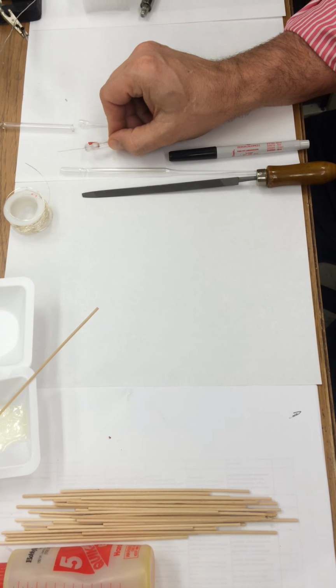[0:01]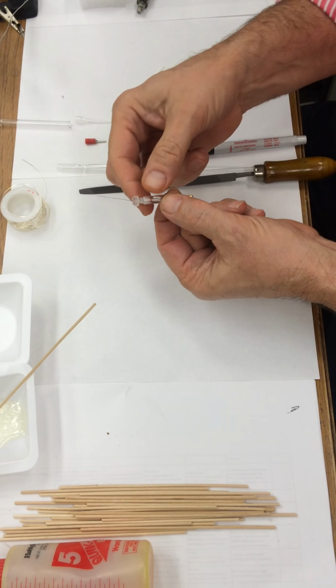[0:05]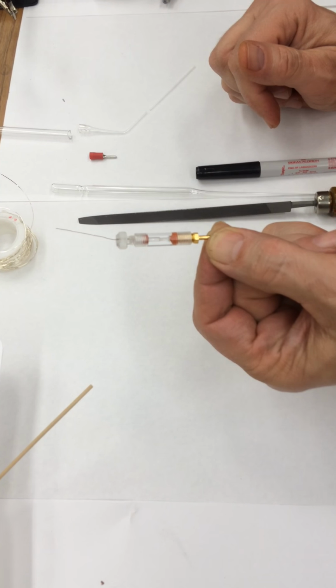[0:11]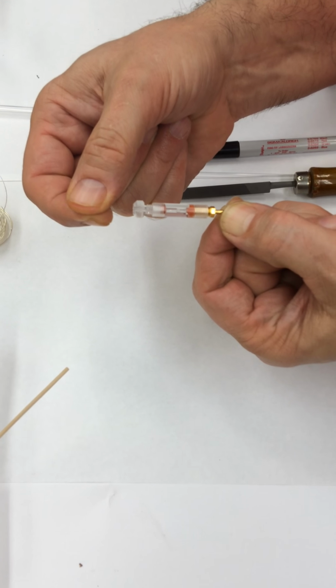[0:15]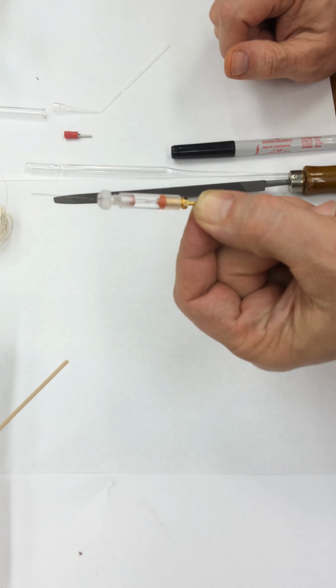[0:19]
So these electrodes right here, we use in the Bio350 and the Bio446 neurophysiology class. You buy these from a company, and it's just plastic with a little rubber stoppers here and a silver wire on the inside. This cost $84 each. So right now we're short of these, and we're going to go ahead and make some simple electrode holders.
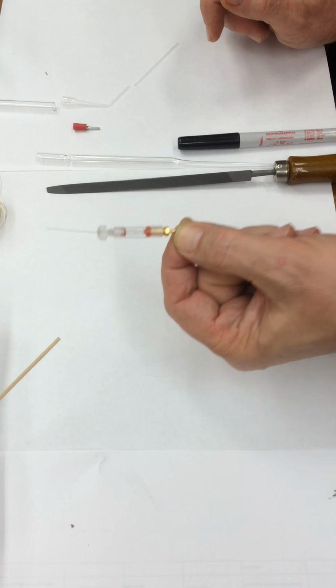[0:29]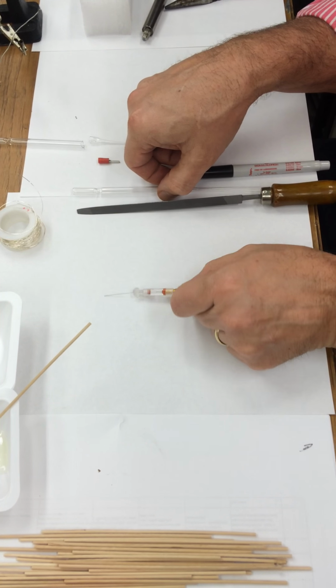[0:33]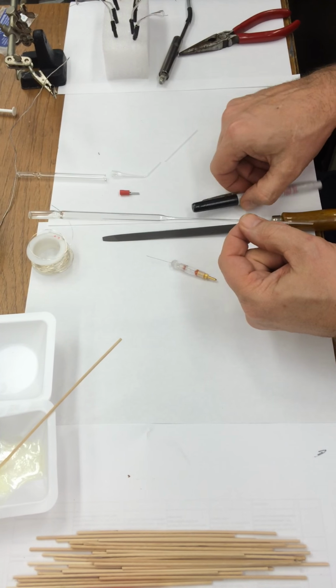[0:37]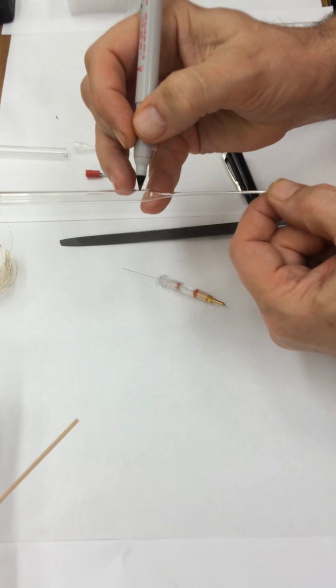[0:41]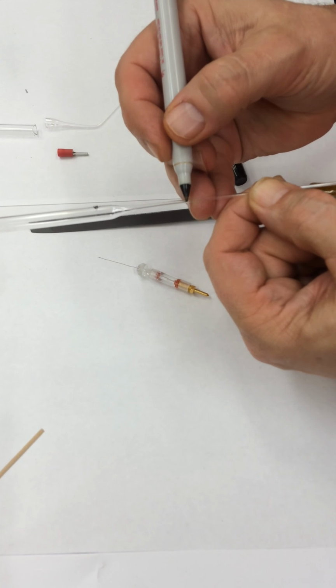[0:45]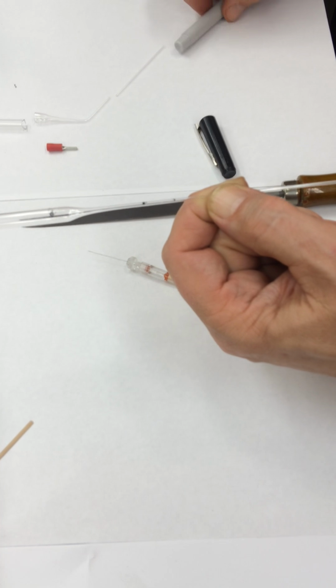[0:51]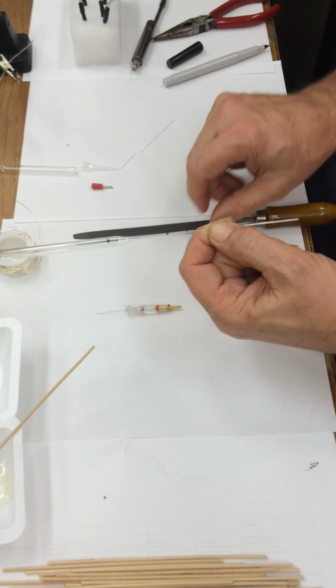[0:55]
These are for intracellular electrodes. So all you have to do, all the tools you need, are some very simple stuff that you might have in the lab already. One, a pasteur pipette. And what we do with this is we mark it in certain spots, like right here, and about here, and about here. And why do we mark that? Because these are the spots that we're either going to bend it or break it into.
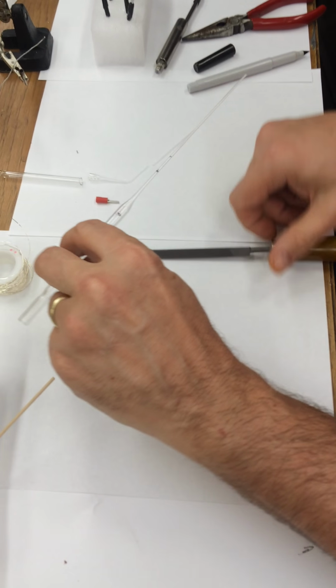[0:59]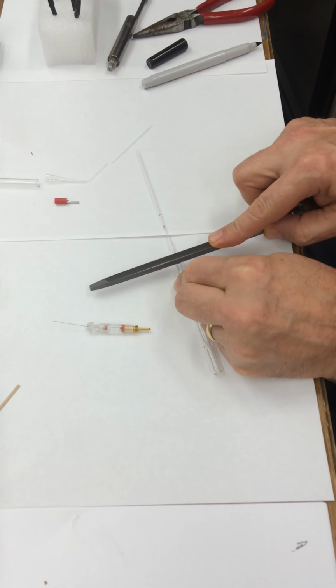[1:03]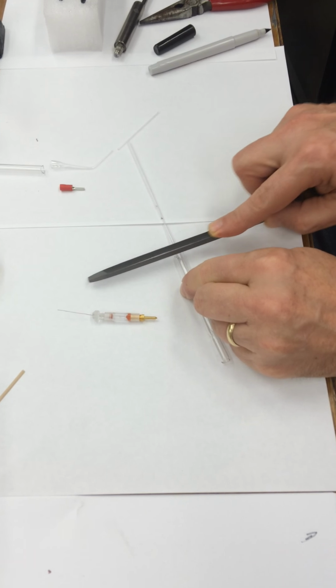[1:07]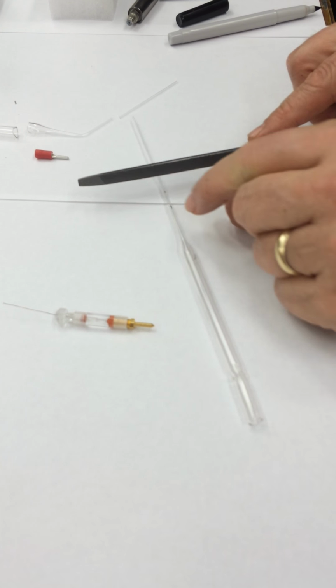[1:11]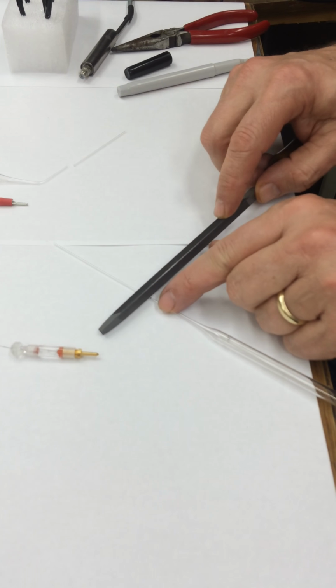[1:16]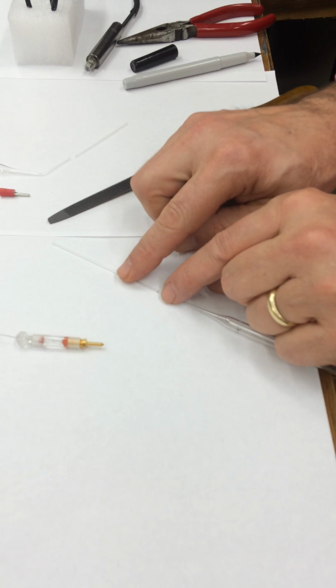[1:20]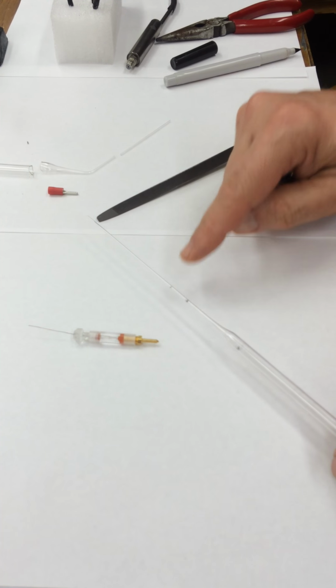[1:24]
And the way we break them is to etch them with a file. And so all one has to do is to go back and forth and then rotate the glass around and keep doing it like that. And then the hard part is the very fine tip on this side. So all you do is just etch it a little bit, and then about more than half the time after you get the hang of it, it'll break right the way you want it.
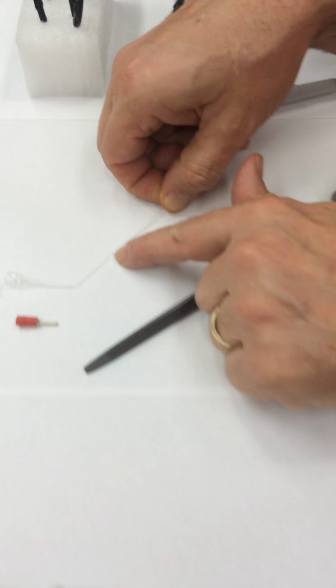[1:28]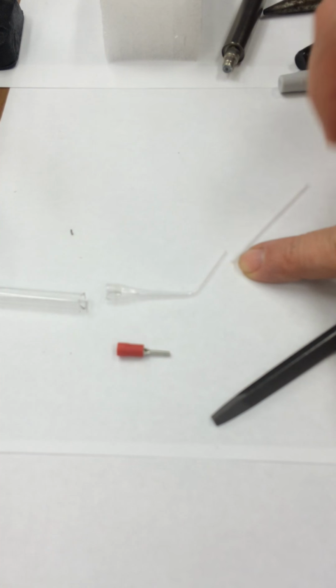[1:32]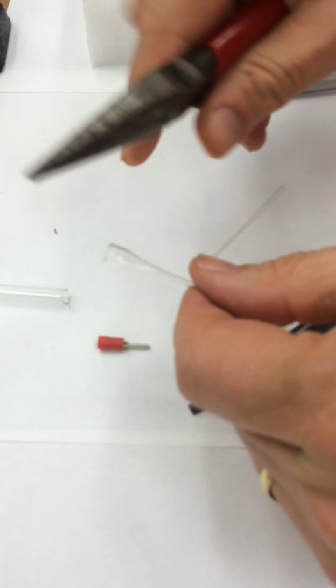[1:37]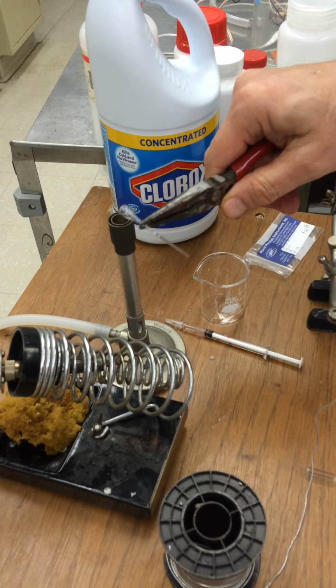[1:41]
So here's one that's broken, been cut here. You see it's here, and it's been cut here. And now what we do with this is we would take this, and because there could be sharp edges on there, we hold it with this and you put it over a Bunsen burner and you fire polish the glass.
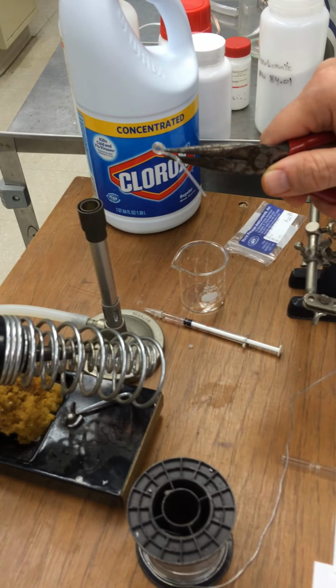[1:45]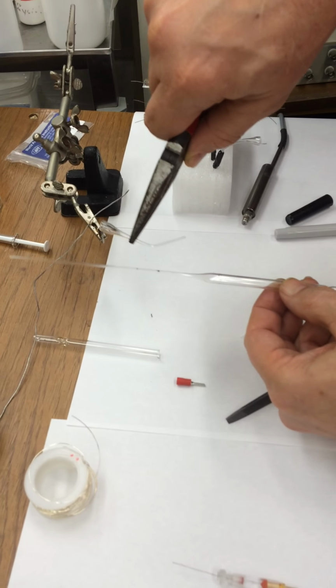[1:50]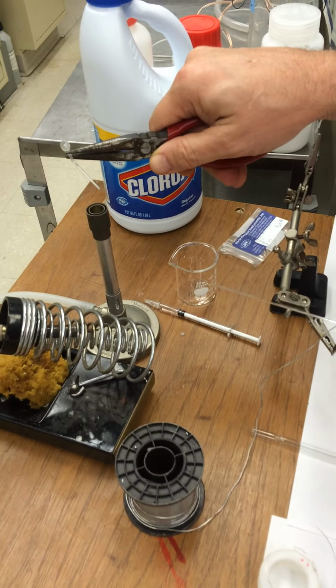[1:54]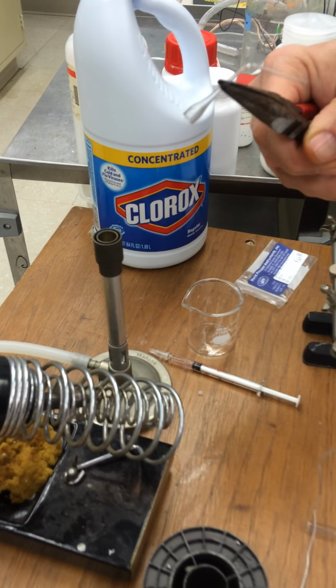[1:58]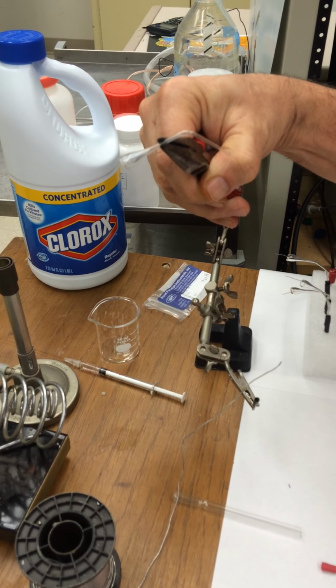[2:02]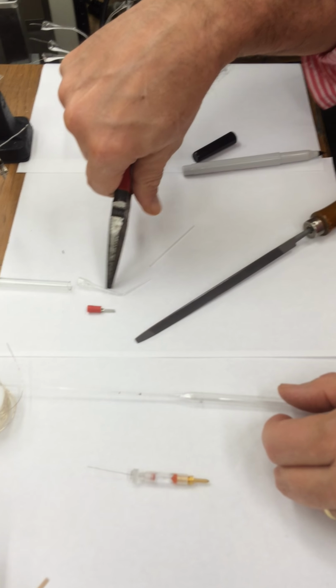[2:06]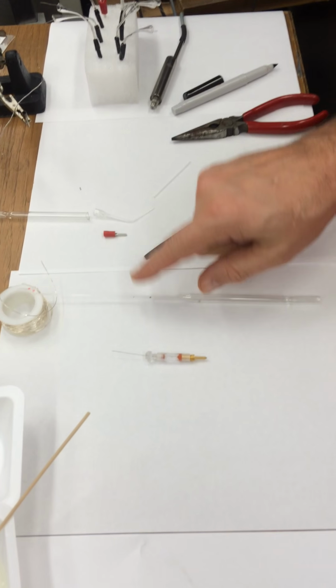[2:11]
This is already bent. Remember, originally it was just straight. So what you can do to bend it is just put that over the fire and it will slowly bend down like that. You want it about 45 or 30 degree angle for these electrodes, and I'll show you why.
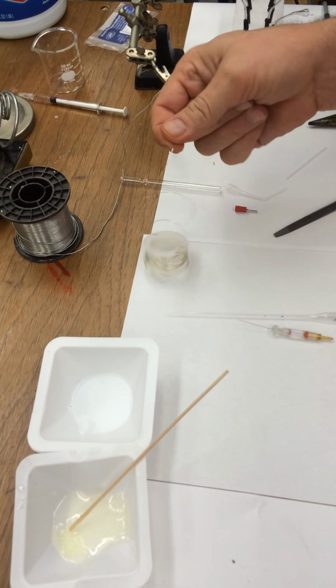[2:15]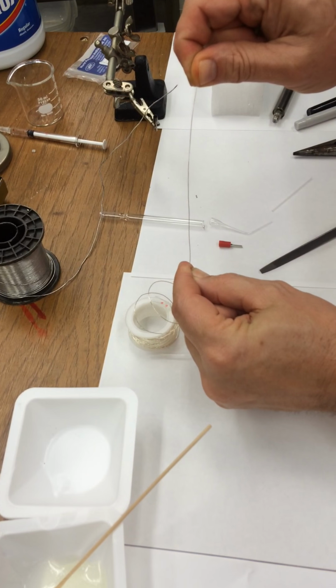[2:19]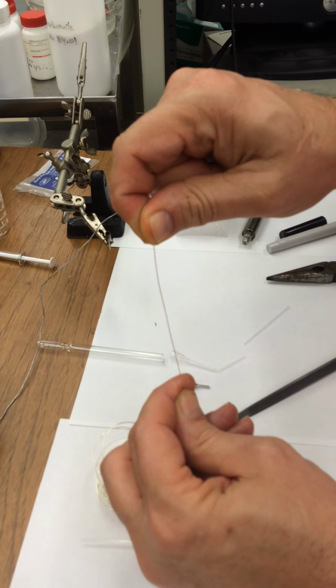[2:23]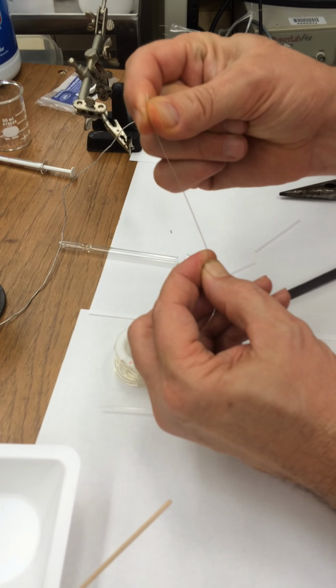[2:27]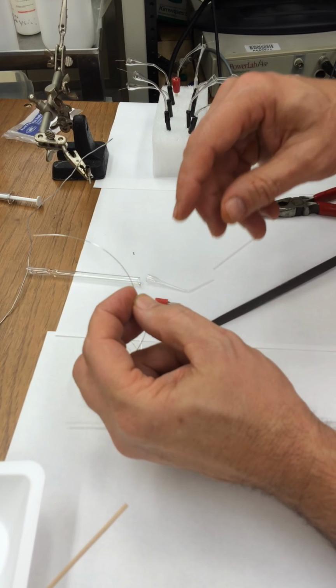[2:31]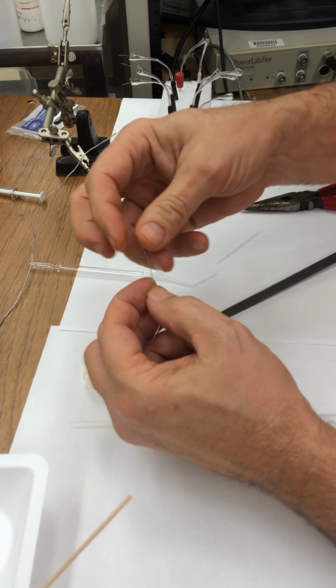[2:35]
Okay, so that's there. So now what we have to do is to get our silver wire that we'll use for intracellular electrode. So get some silver, and you have to watch out what type of silver wire you get, the size of it, because it has to go inside of a microelectrode. Some silver wires come with a coating on it. You don't want one with a coating. What you can do is to cut it at various lengths, and you'll see at the length that you'll need after you make your electrode.
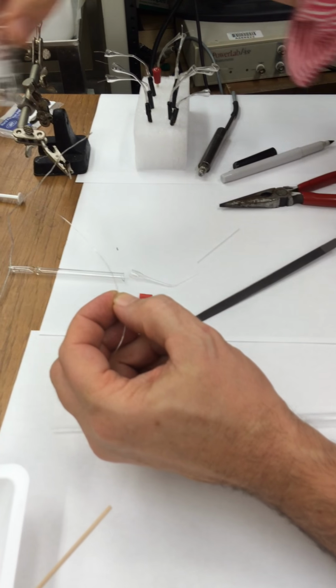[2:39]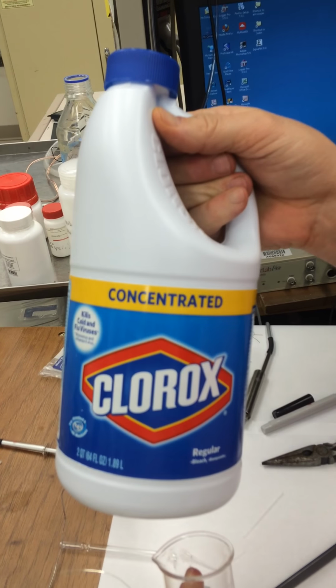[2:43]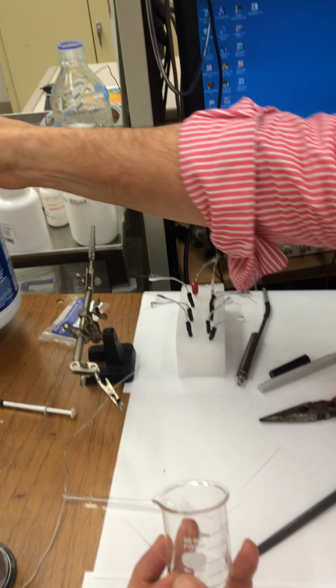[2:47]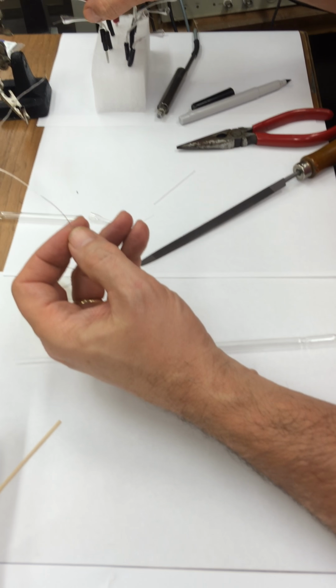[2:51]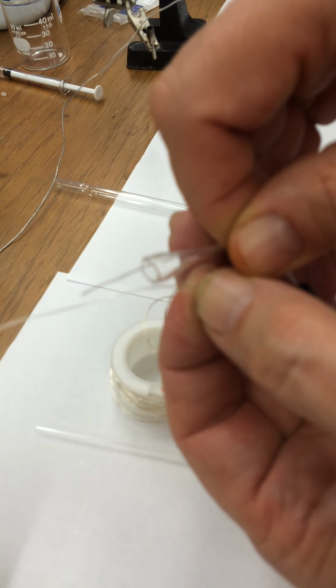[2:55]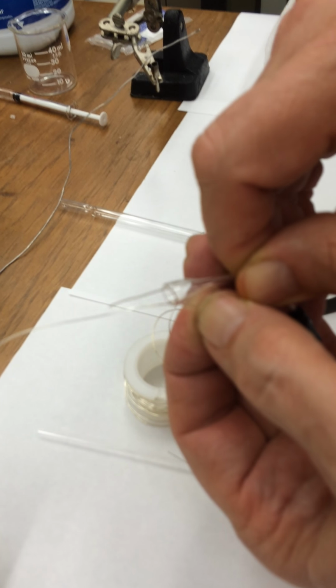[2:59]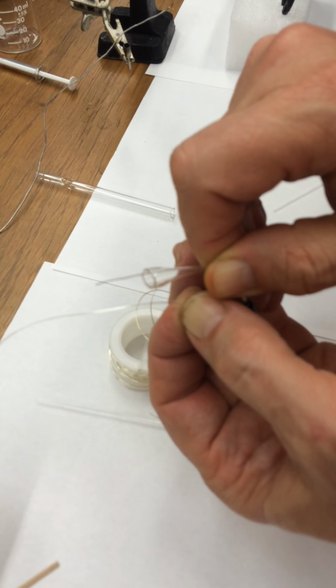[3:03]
So you cut it, and then you bleach it in a beaker with concentrated bleach. Let it sit for about 20 minutes, and now that will chloride your silver wire. Let me just show you the difference between a chlorided and a silver wire that has not been chlorided. See how shiny that one is? And how gray the top one is. This one sat for 20 minutes in bleach.
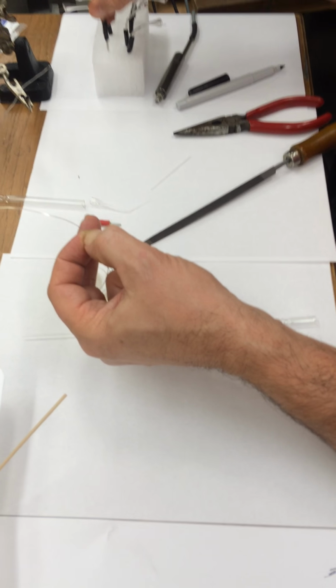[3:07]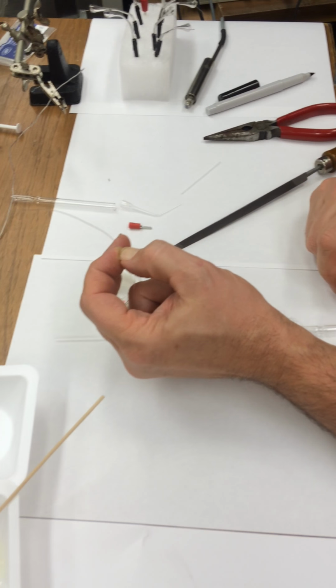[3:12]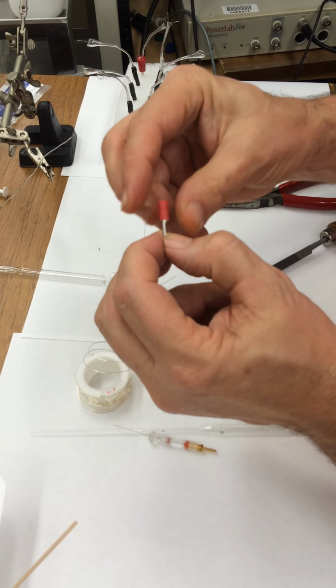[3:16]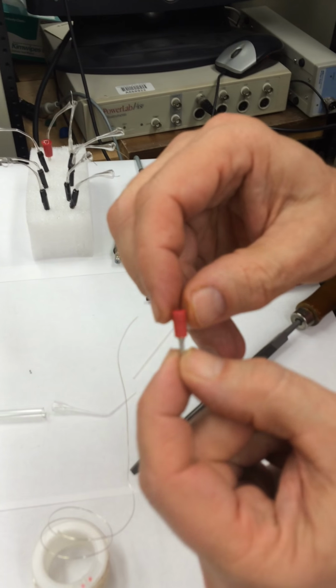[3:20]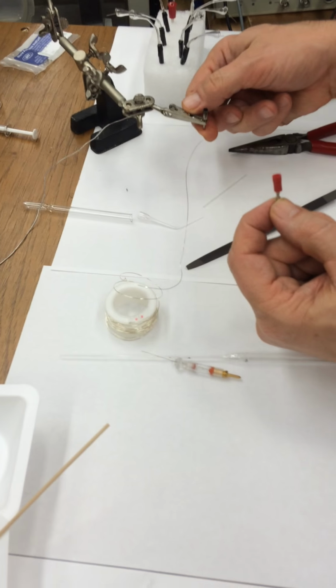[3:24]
Okay, now after you've chlorided your wire, you go ahead and wash it off, and now we can solder it onto our little holder. So you take a little holder like this. It's a 2 millimeter pin that you can order from various places. They come at different types. Here's one over here as well.
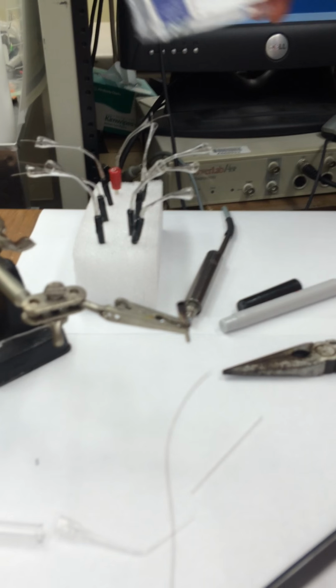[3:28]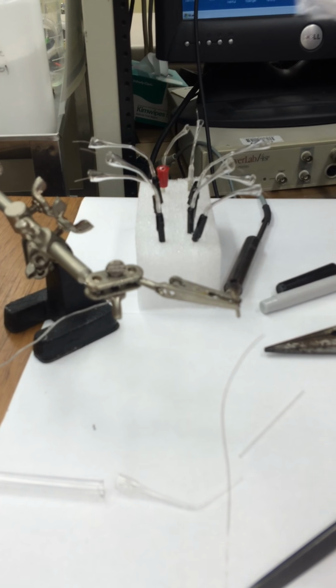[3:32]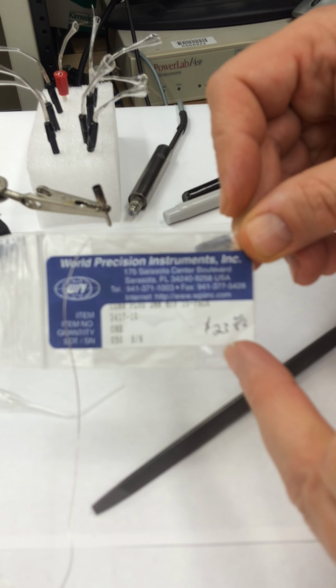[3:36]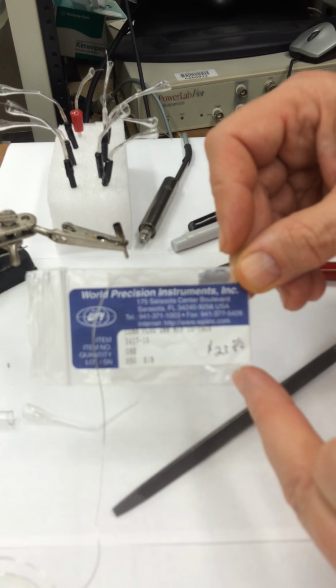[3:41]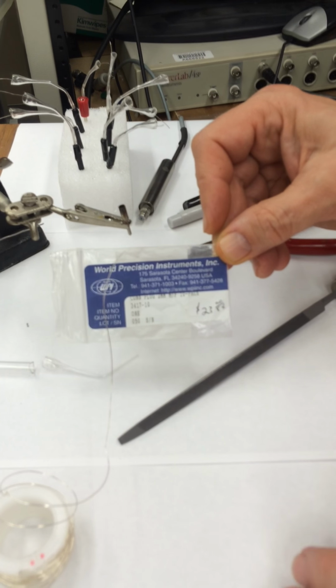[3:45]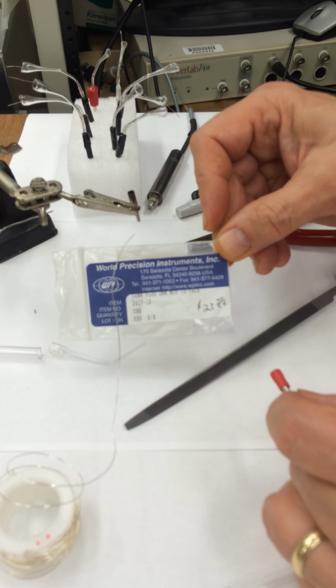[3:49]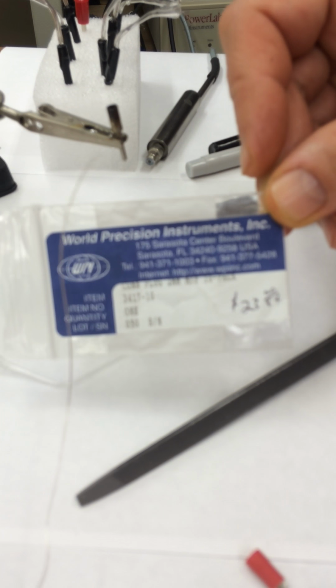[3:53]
The ones that we are using over here that are on our electrodes that we've already made are from World Precision Instruments, and it only costs $23 for a pack of 10. So divide this by 10, $2.30. If you add up the glass and a little bit of silver wire, that might be another 50 cents. So for $2.50, you will have an electrode instead of an $84 electrode.
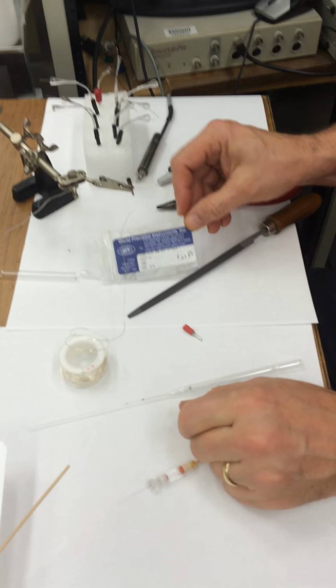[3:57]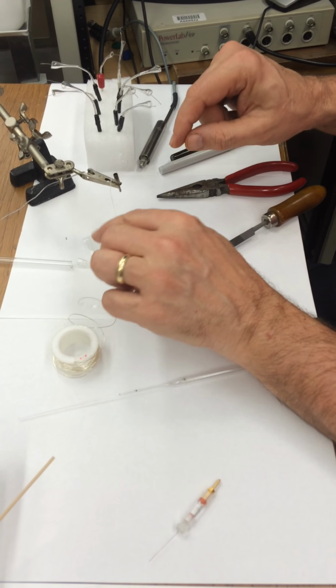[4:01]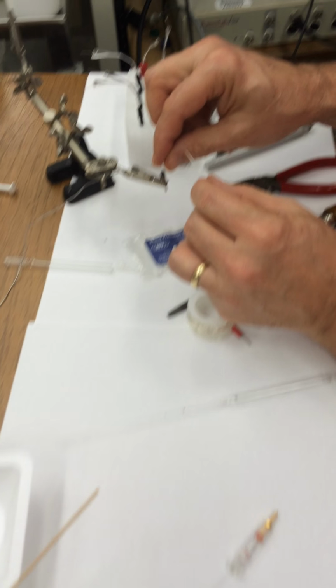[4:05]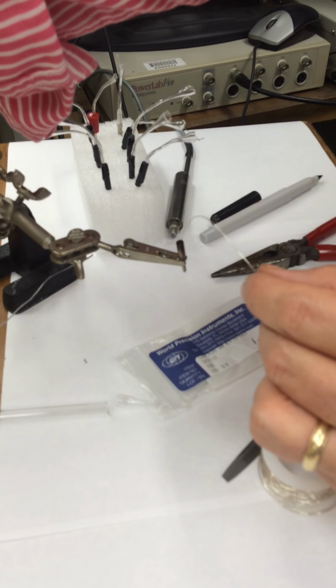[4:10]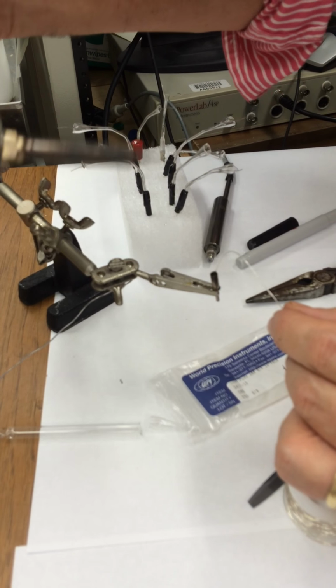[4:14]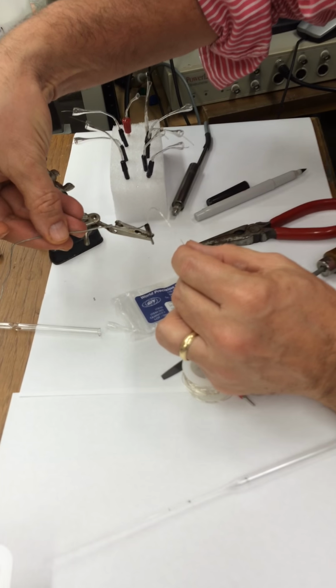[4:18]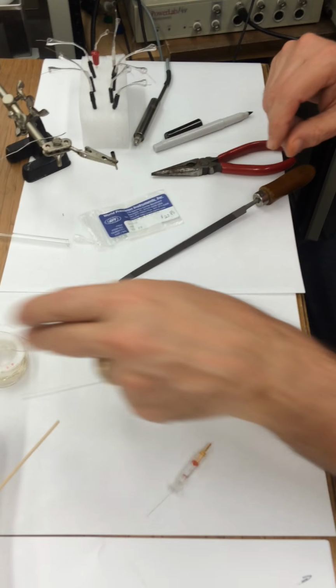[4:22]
All right? So now that you have that silver wire, and it's chlorided, you can go ahead and put that into your pin holder. It's a 2 millimeter pin, and go ahead and solder that in with your soldering iron. All right, and hopefully you know how to solder and get that in there. If not, there's lots of YouTube videos that you can watch.
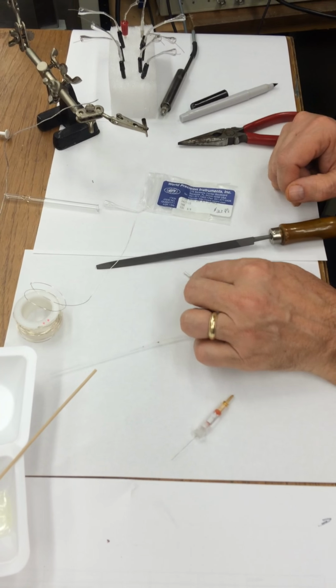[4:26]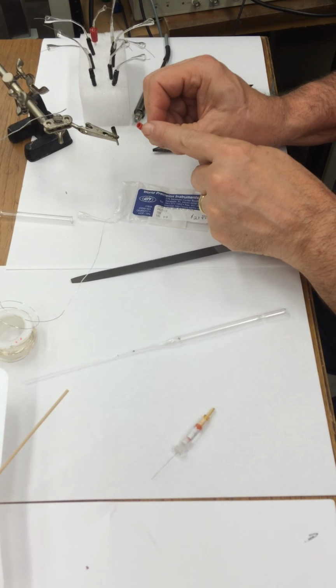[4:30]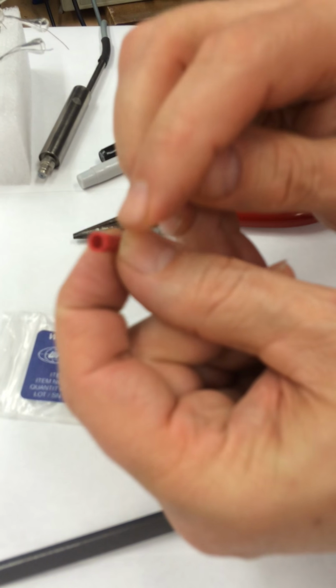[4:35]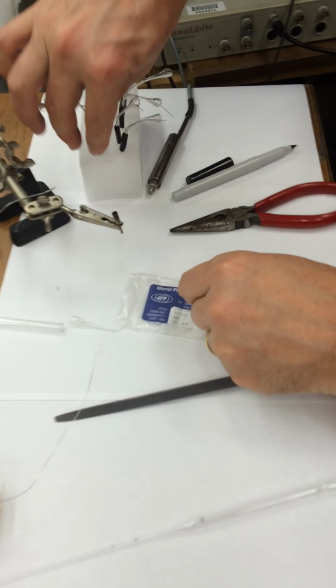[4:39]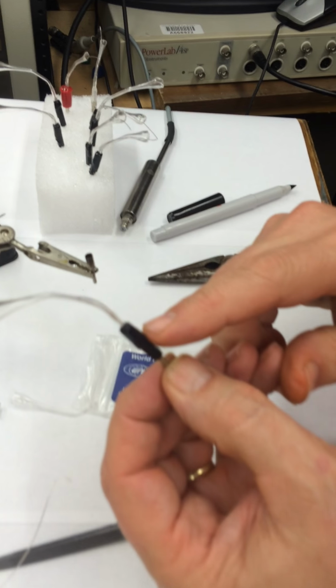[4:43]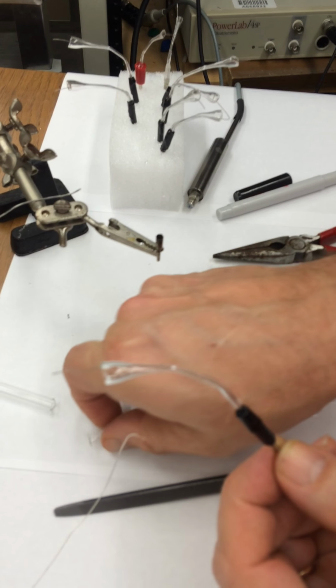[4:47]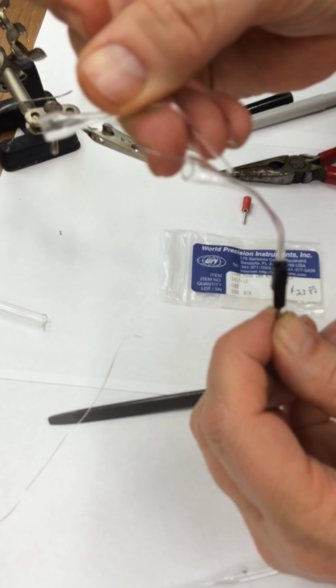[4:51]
Okay, after that's soldered in, or maybe one of these. There's all different types of little pins. I like these because they have a connector on the side. Sometimes you have to take these connectors off when you solder, otherwise that will be melted. So let's look at the ones from WPI. After it's soldered, I feed the glass over the silver wire like that and put it down on the pin.
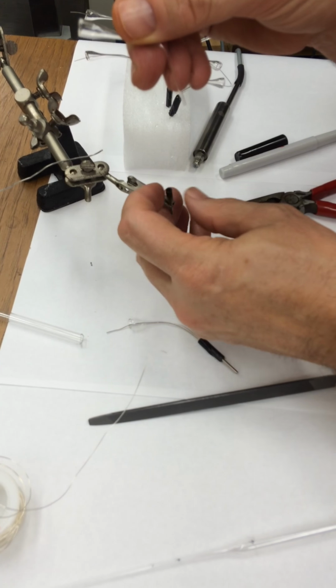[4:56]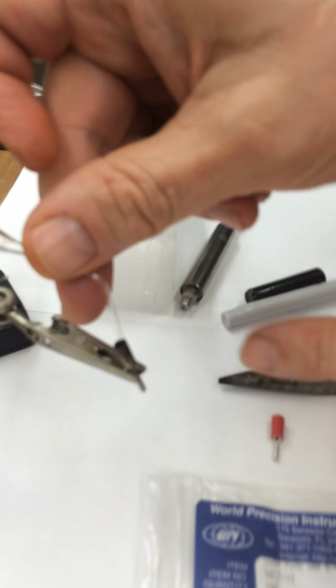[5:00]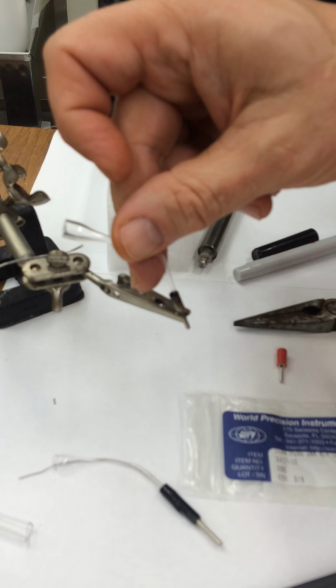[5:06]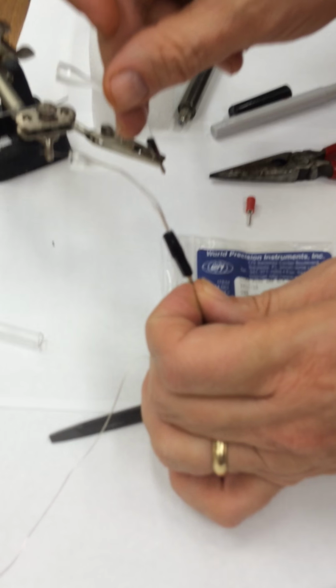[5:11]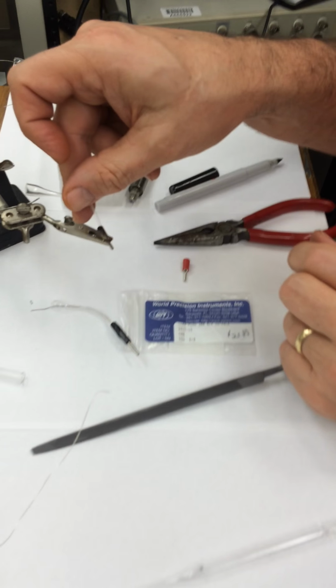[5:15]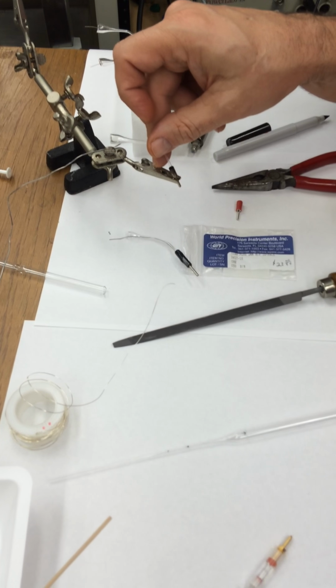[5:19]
It would look something like that, like right here. The little black thing can slip up on there, and some of these have a screw so you can tighten it on, or you can even use heat shrink tubing that will shrink when it's hot, and that will help hold it together. Why that's useful is it gives it some support so the glass won't break right there.
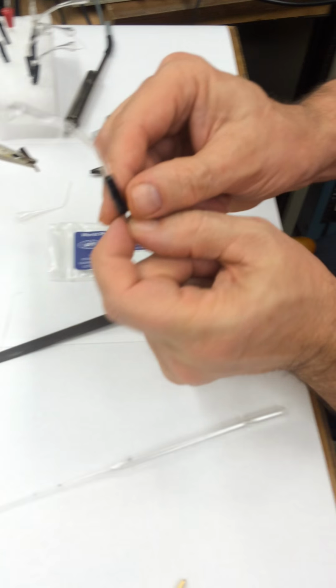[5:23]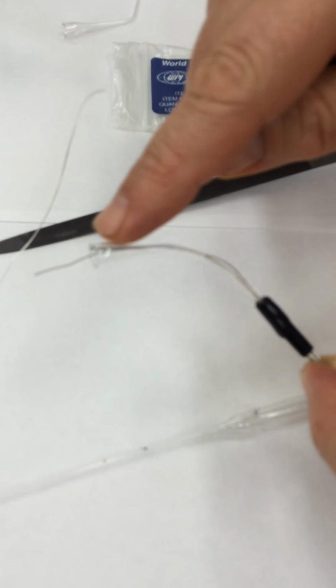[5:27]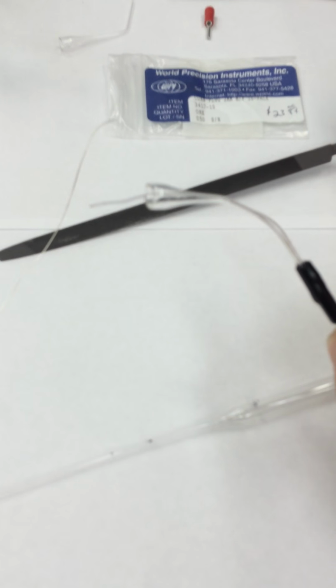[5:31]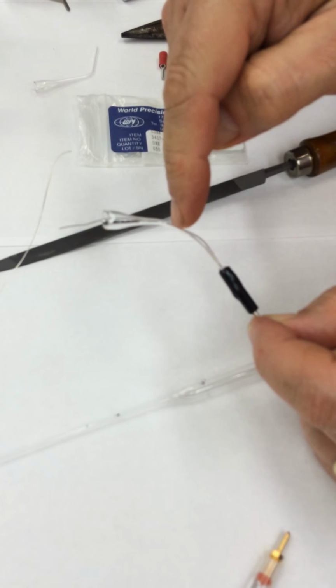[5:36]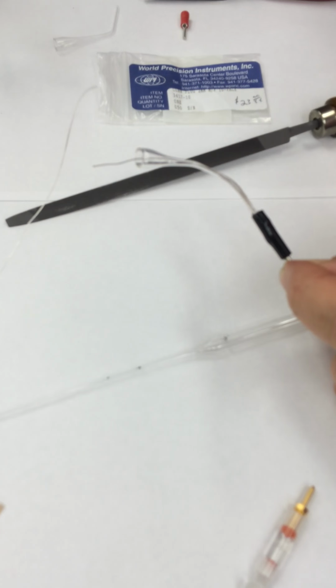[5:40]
Now let's look at one of these electrodes. So you can see this electrode here has a little bit of a bend. And why is that open like that? Well, I think it's going to be easier for the students to load their intracellular electrode onto this. You can look at different versions, but this one might be relatively easy.
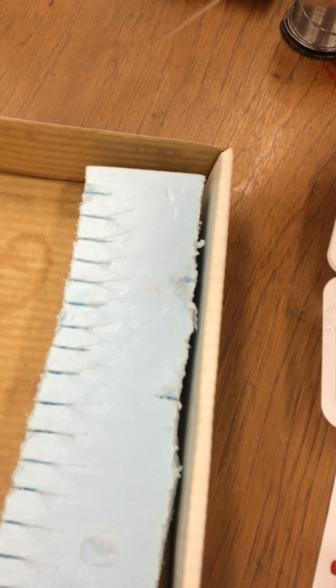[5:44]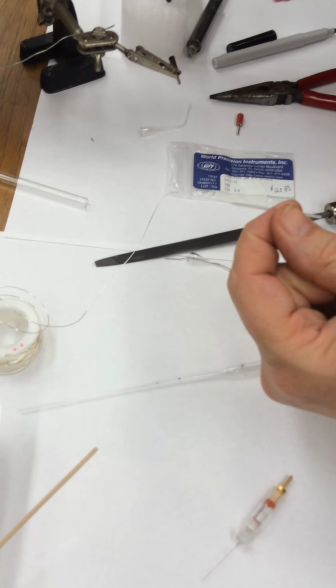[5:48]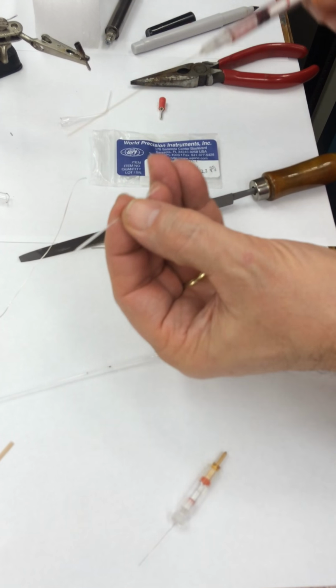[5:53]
So what we're going to do is to take our intracellular electrode, and remember when you fill these, I saw somebody the other day in the Bio 350 lab filling it with the,
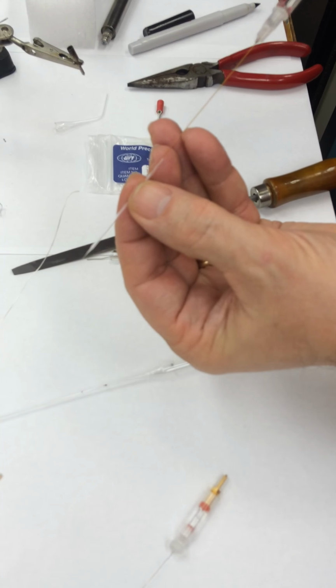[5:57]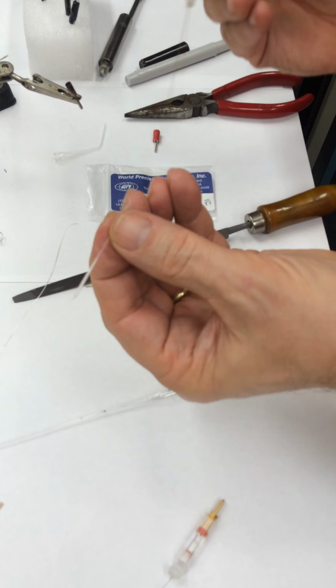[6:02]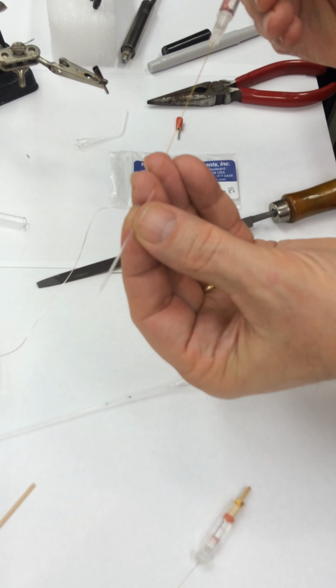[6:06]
let's see if I can get this down. Oh my God. Sorry. Anyways.
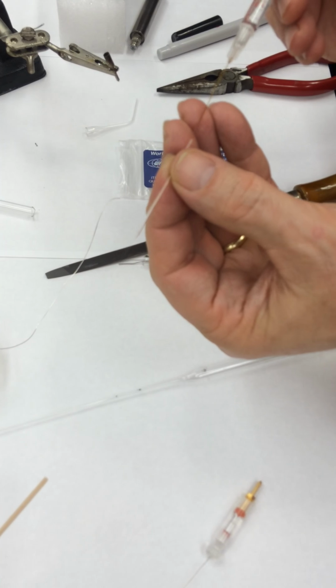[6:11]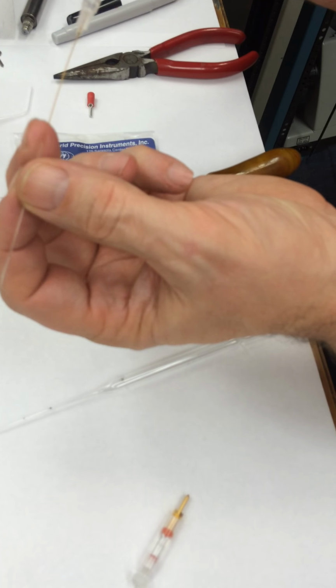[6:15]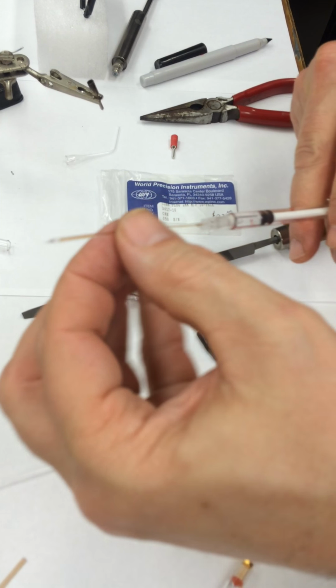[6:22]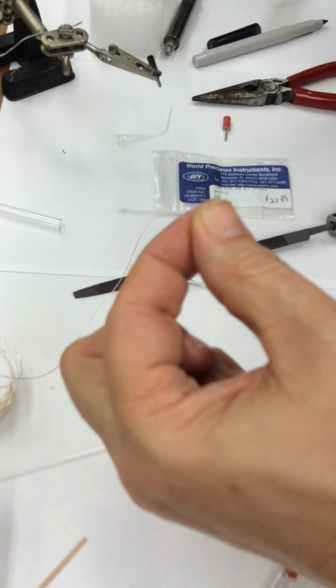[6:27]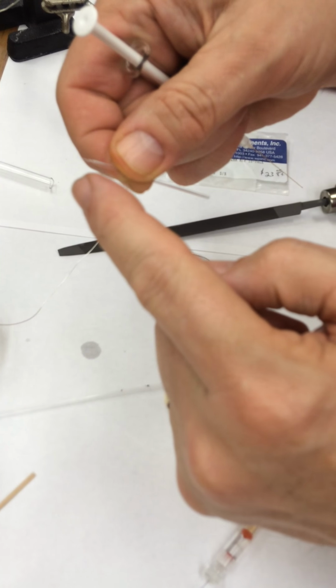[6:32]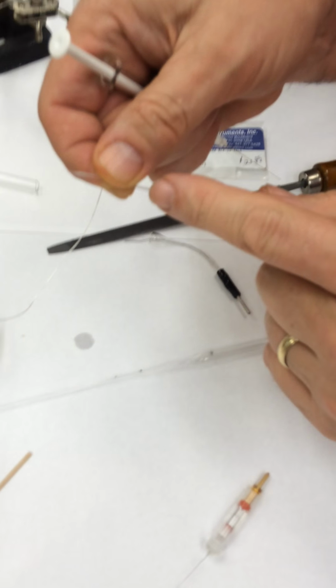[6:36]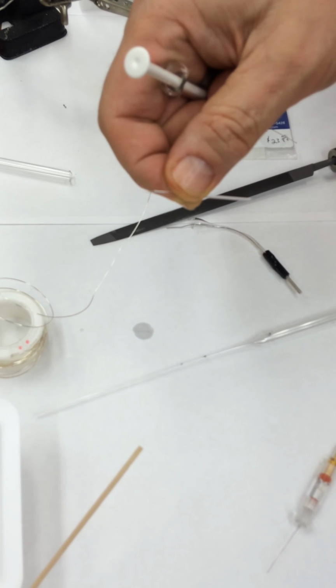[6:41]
You don't want to fill it like this, because what's going to happen? After the solution comes out, it's going to drip down over the tip. You want to hold it up and then fill it like this. And then when the solution drips out the back, that's okay, because you can take your finger and wipe it off, and there's no KCl on the tip of your electrode that's going to go into your bath. Remember, this is 3 molar KCl. If that 3 molar KCl gets inside your bath with your preparation, it will kill your preparation.
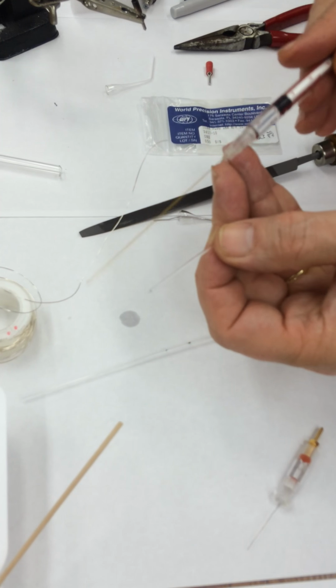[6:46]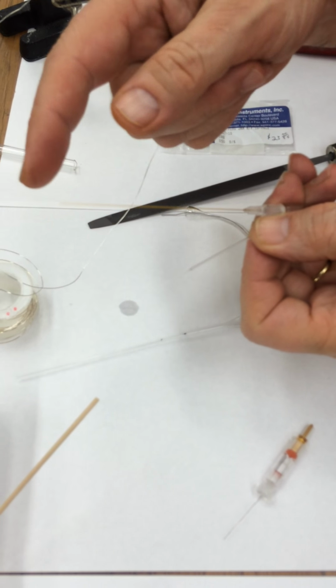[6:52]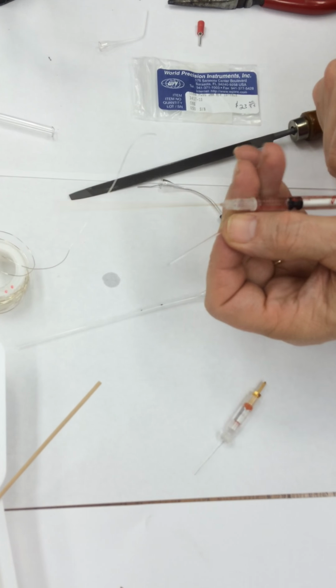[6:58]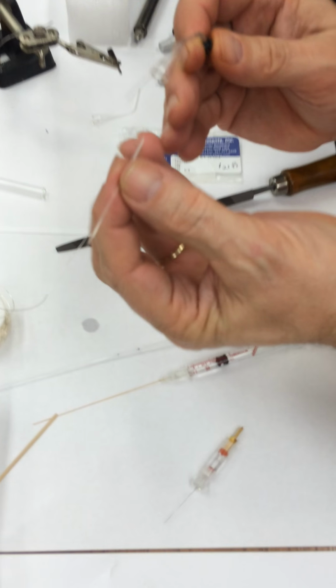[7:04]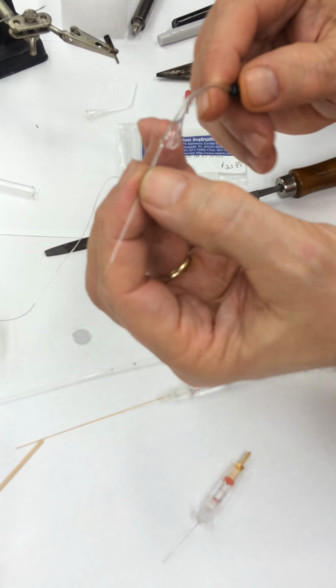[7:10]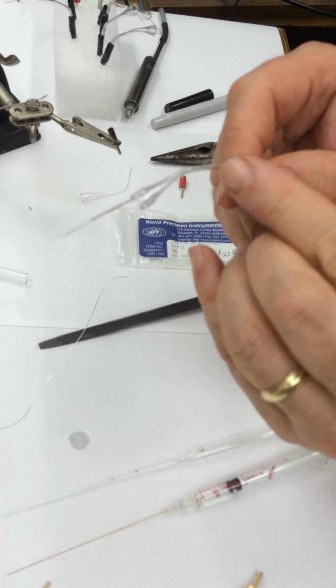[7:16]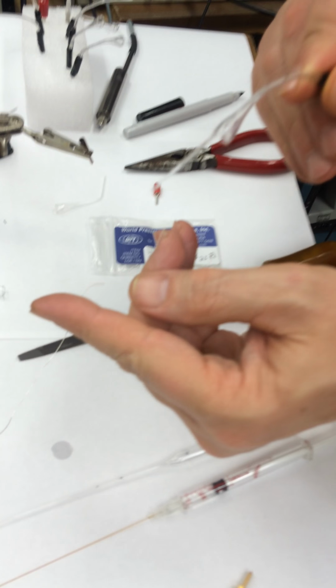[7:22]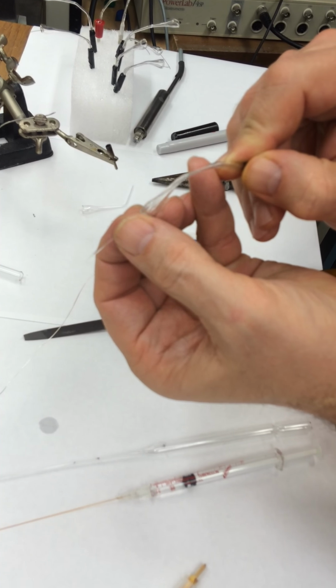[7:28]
Also, just something to learn is that these little filament electrodes are $10 each. So you want to be a little careful not to bend them too much and break them, because each one is $10. Okay, so after you have your filled electrode, you can put this right onto your silver wire. And what's nice about these electrodes, the way they're made, is you can just kind of twist that around. And now you see that the way this glass is actually bent again is that that electrode wedges right in there. So now when you push it in onto your preparation, it won't be able to push back anymore, because you've got it in as tight as it will go.
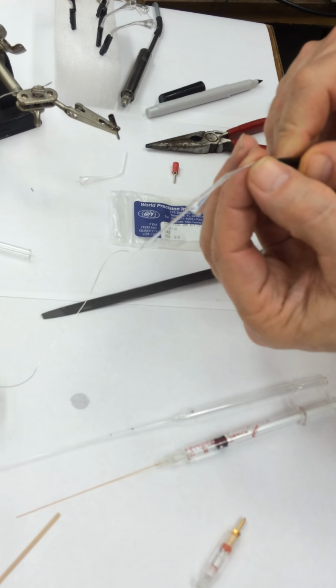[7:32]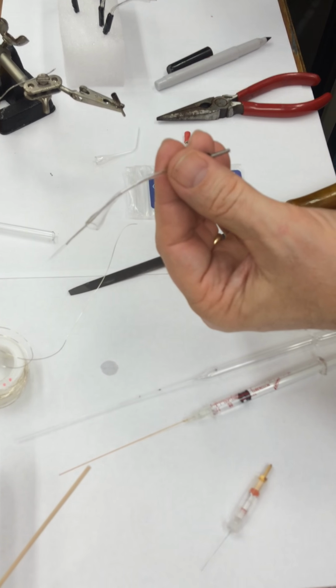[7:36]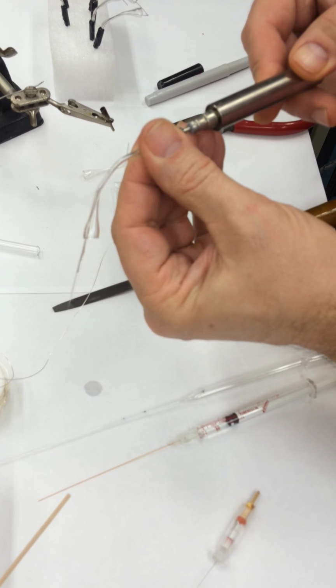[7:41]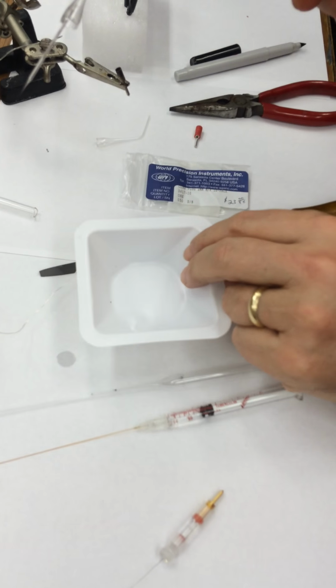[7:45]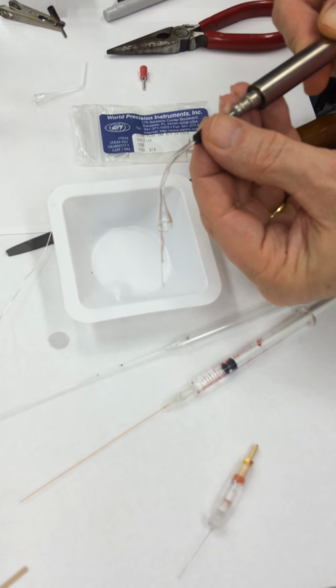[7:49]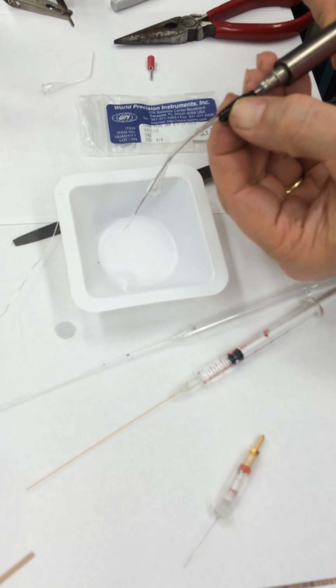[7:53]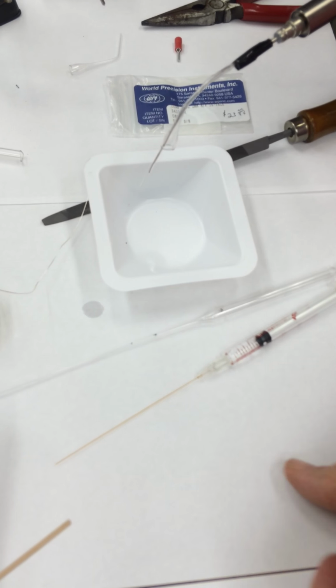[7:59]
So now it'll just poke into the muscle fiber or the neuron. What's nice about these compared to the other ones is that when you put it onto your intracellular head stage, you can have it turned sideways. And now pretend your preparation is in this dish, for example, and your electrode's here. You can put that in and then rotate this around, and now you're ready to poke your muscle fiber by moving your manipulator.
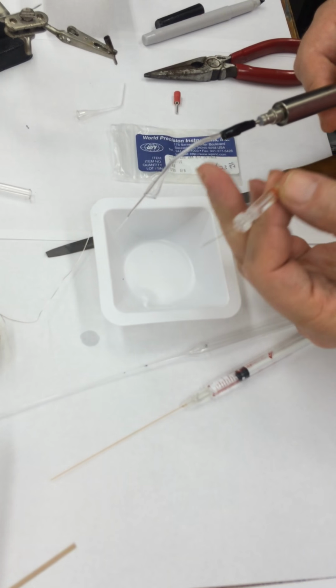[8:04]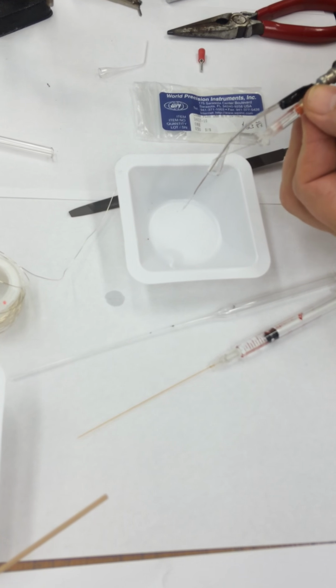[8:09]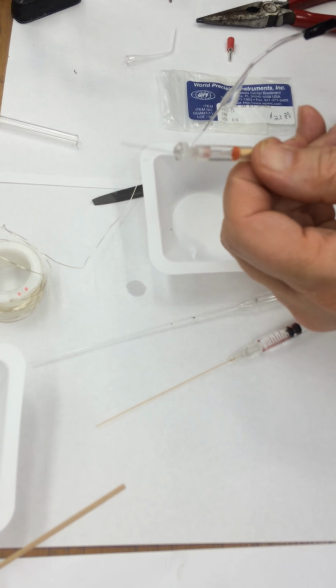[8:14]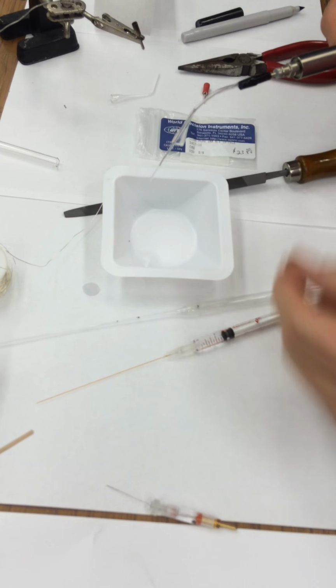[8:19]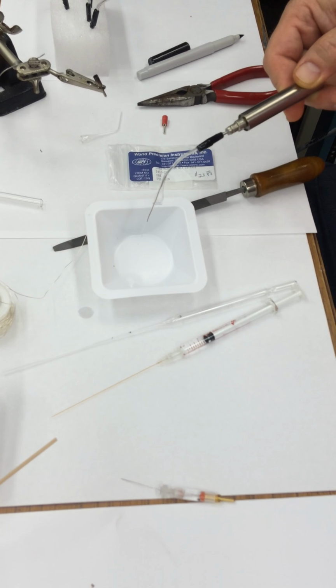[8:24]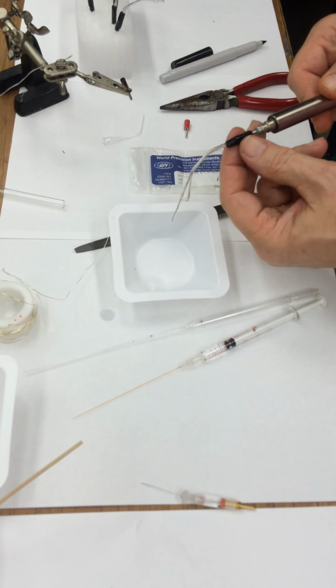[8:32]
This is also nicer, I think, than these, because this little bend helps you to go straight down on your muscle fiber instead of at an angle. So you'd have to tip this one a lot more to get down on there. They do make these at 45 degrees, but they actually cost you even more money. So this kind of cheap electrode for probably $2.50 will do the job and help you poke cells or muscle fibers. I've used these for a number of years, and we've published very good papers with this as well.
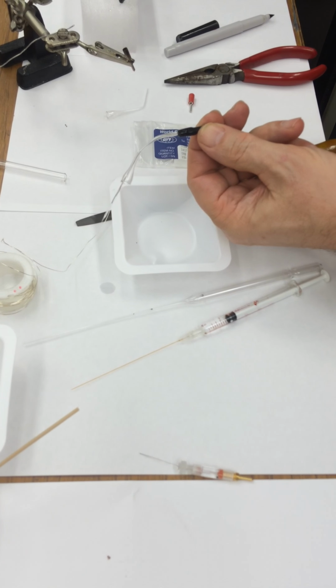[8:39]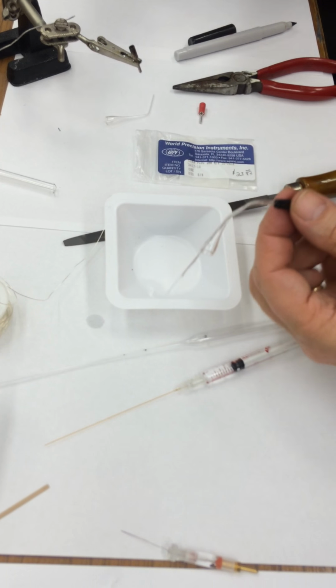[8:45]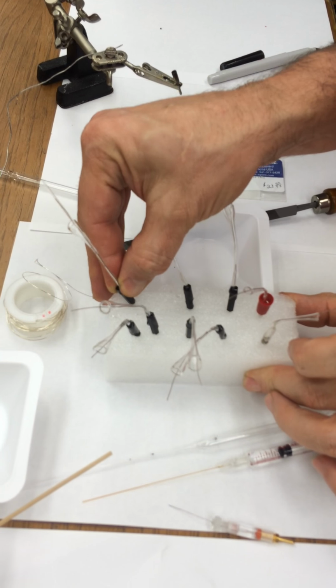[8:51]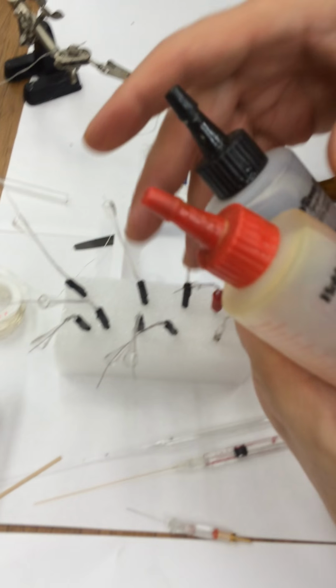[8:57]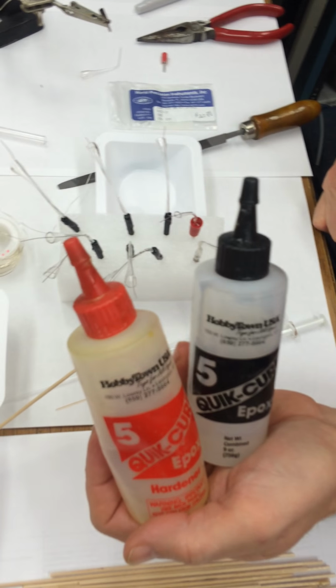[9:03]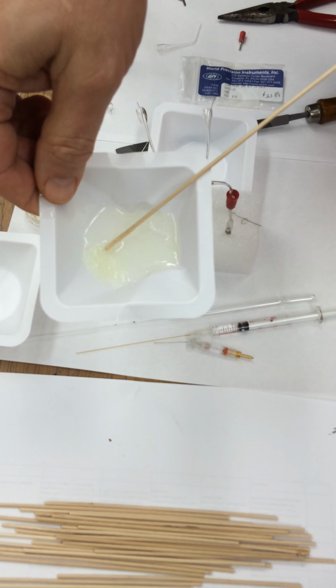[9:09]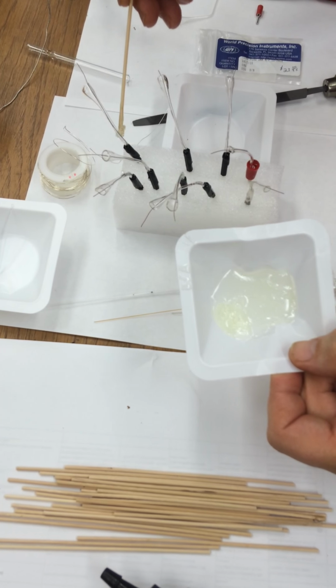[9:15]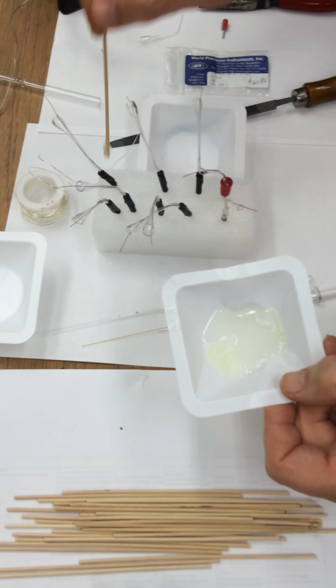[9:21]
Now, if you didn't use heat shrink tubing on here, or this plastic's a little bit loose, what I tended to do with this whole arrangement that you see right here is I put them on here like this, without that glass there so you don't stab yourself. And I used quick drying epoxy. So you mix these two together, equal amounts, mix it in a little weigh boat dish like that with a stick, and stir it up. And you can see this is already hard. But what's nice is you can put the glue onto the edges, and it helps give more support to that glass and that little holder right there.
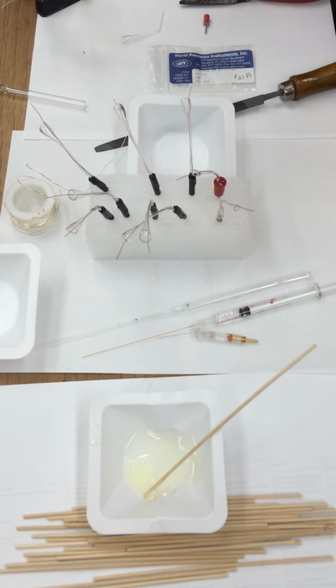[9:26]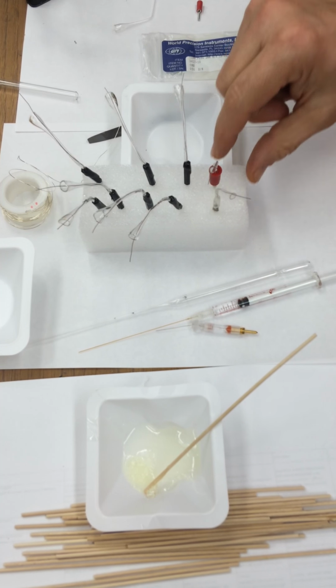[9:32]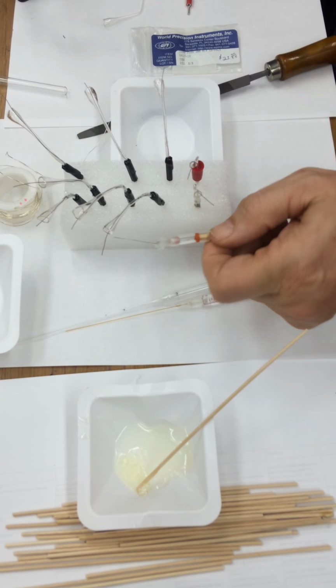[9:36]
So now you have 1, 2, 3, 4, 5, 6, 7, 8, 9, 10 electrodes for $23 or so, and it's still a lot cheaper than one of these.